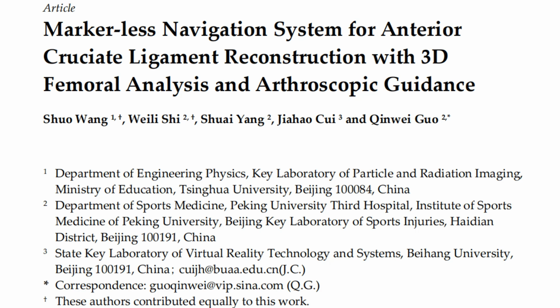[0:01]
Markerless navigation system for anterior cruciate ligament reconstruction with 3D femoral analysis and arthroscopic guidance.
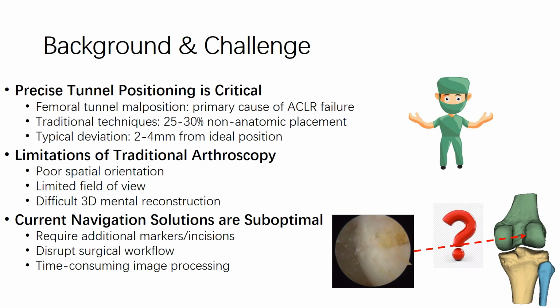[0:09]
Anterior cruciate ligament reconstruction success hinges on precise tunnel placement, yet traditional arthroscopy leads to non-anatomic positioning in up to 30% of cases due to poor spatial orientation and limited visibility. While existing navigation systems could help, they require additional markers, disrupt surgical workflow, and involve time-consuming processing, creating a clear need for a more efficient, minimally invasive solution.
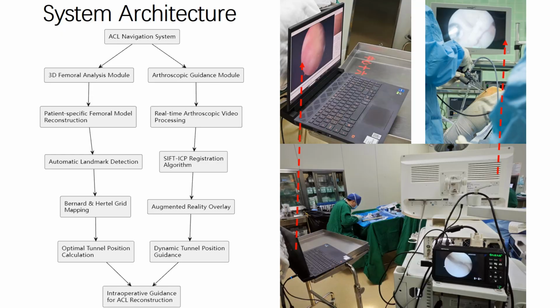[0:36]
Our anterior cruciate ligament navigation system integrates two parallel modules working seamlessly together. The 3D femoral analysis module reconstructs patient-specific models and calculates optimal tunnel positions using automatic landmark detection and Bernard and Hertel grid mapping. Meanwhile, the arthroscopic guidance module processes live video using SIFT-ICP registration to provide augmented reality guidance. This markerless approach delivers precise intraoperative navigation without disrupting standard surgical workflow.
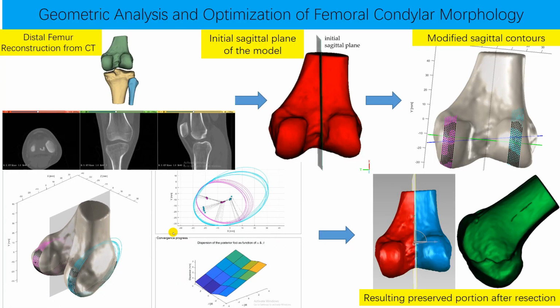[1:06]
Our system reconstructs the 3D femoral model from CT images and establishes the initial sagittal plane using key anatomical landmarks. We then perform geometric analysis of the condylar profiles using curvature calculations and elliptical fitting to characterize their morphology. Through an iterative optimization process that minimizes eccentricity and focal dispersion, we refine the sagittal plane orientation, preserving the lateral condyle, which contains critical landmarks for precise anterior cruciate ligament tunnel positioning.
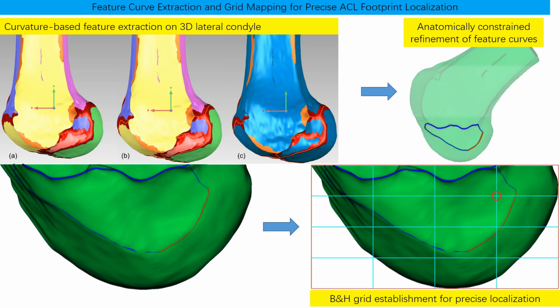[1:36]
Our approach extracts critical feature curves from the lateral femoral condyle through a two-step process. First, we perform principal curvature analysis on the 3D mesh to identify high curvature regions, connecting these points into continuous curves. We then refine these curves through anatomical filtering to isolate the clinically relevant characteristic lateral ridge. Using Blumensaat's line as reference, we establish the Bernard and Hertel grid system on the lateral condyle.
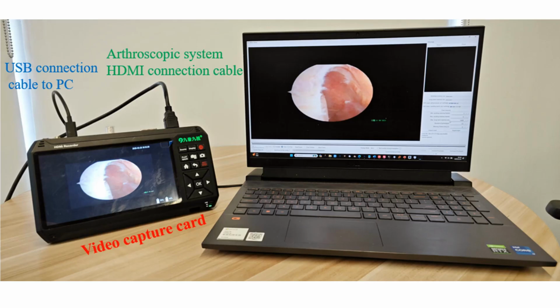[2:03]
A video capture system was integrated with the arthroscopic equipment to enable real-time visualization and recording. The system comprises a compatible video capture card connected to the arthroscope's output and computing device, configured with appropriate drivers and software to optimize image quality parameters.
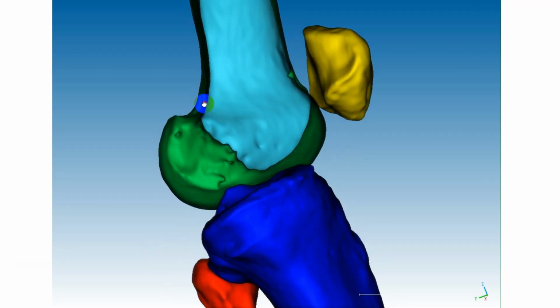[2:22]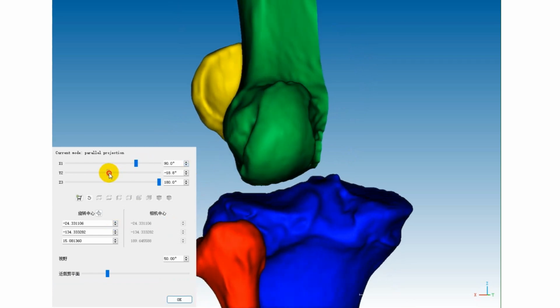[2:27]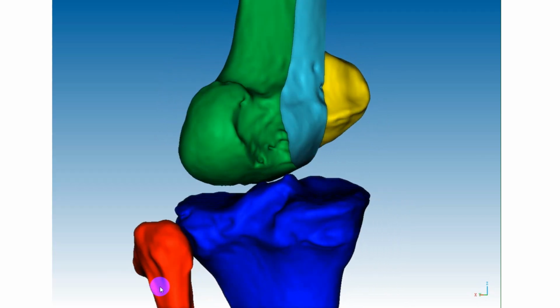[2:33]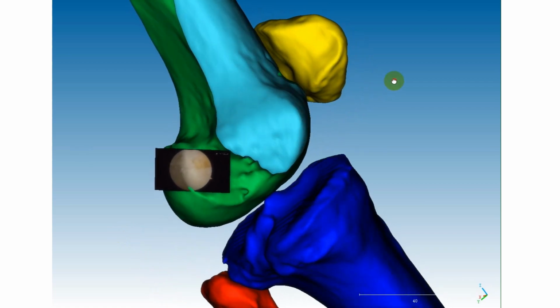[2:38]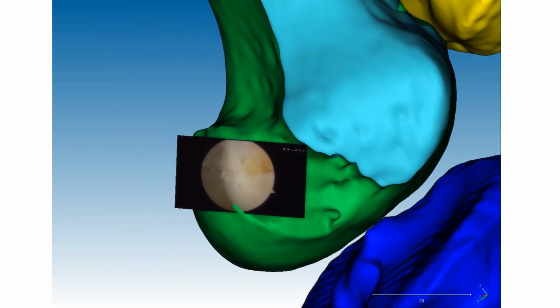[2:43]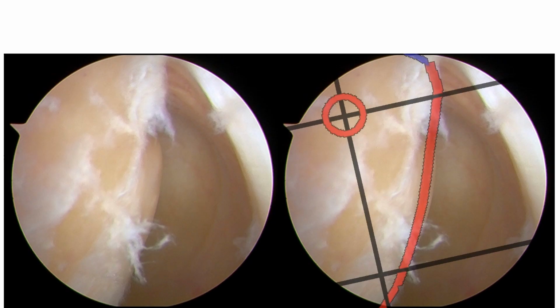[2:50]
Our system overlays a Bernard and Hertel grid onto arthroscopic images in real time, enabling precise ACL tunnel positioning. Using a SIFT-ICP registration framework with sub-millimeter accuracy, the semi-transparent grid maintains visibility of underlying anatomy while providing standardized references. The system dynamically tracks key landmarks like Blumensaat's line, allowing surgeons to accurately locate optimal tunnel entry points within their familiar arthroscopic view. This figure demonstrates our surgical navigation system for tunnel positioning during ACL reconstruction.
By overlaying the Bernard and Hertel grid onto arthroscopic images, we transform standard arthroscopic views into precise surgical navigation tools. The grid system provides standardized anatomical references that guide optimal femoral tunnel placement, allowing surgeons to identify the ideal entry point with greater accuracy and confidence.
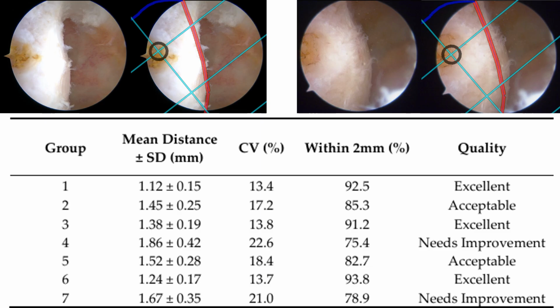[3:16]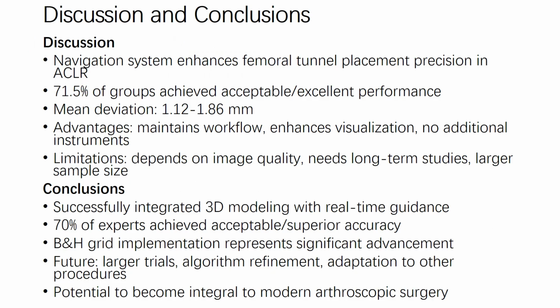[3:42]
To validate tunnel positioning accuracy, we compared expert clinical judgment with computer-assisted navigation guidance. An experienced surgeon marked reference points on the femoral condyle using radiofrequency ablation, which were then compared with system-recommended tunnel locations. Among 7 groups evaluated, 43% achieved excellent concordance, 29% showed acceptable results, and 29% needed improvement. Our system demonstrates significant potential for enhancing femoral tunnel placement precision in ACL reconstruction.
The system maintains standard surgical workflow while enhancing visualization through grid overlay. While performance depends on image quality and larger clinical trials are needed, we've successfully integrated 3D femoral modeling with real-time arthroscopic guidance, allowing over 70% of expert users to achieve superior accuracy levels.